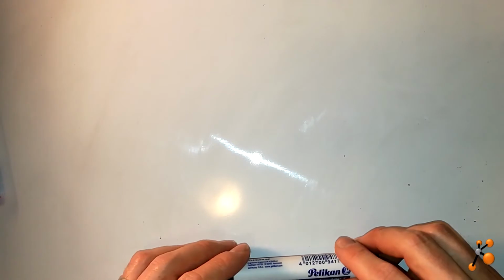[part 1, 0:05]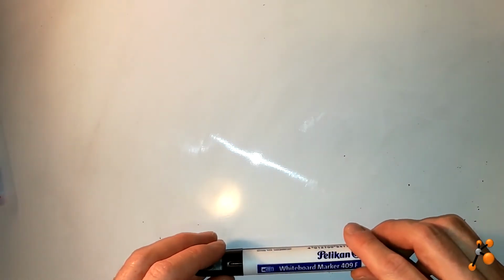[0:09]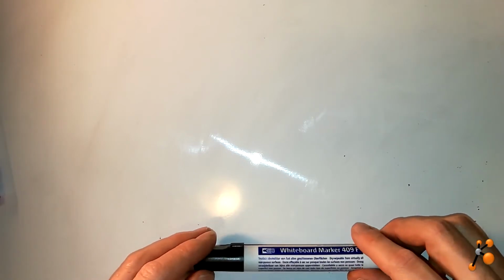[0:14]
Hi everybody, welcome to my channel, and today I'm going to make the first vlog video, and it will not be about a tutorial to explain some technology or some principle, but it's more about sharing ideas.
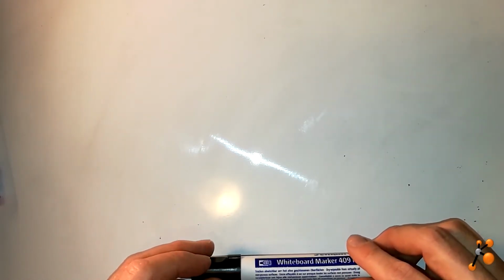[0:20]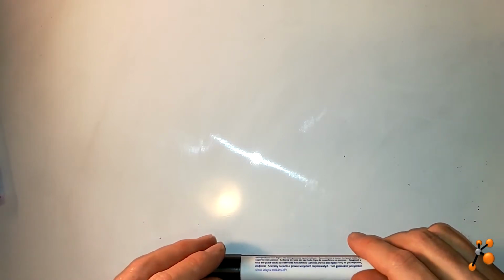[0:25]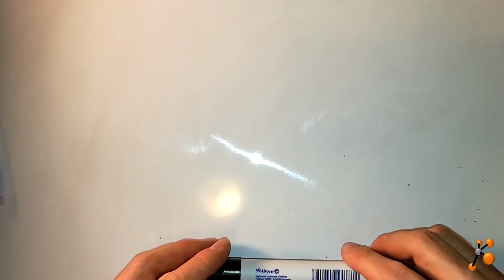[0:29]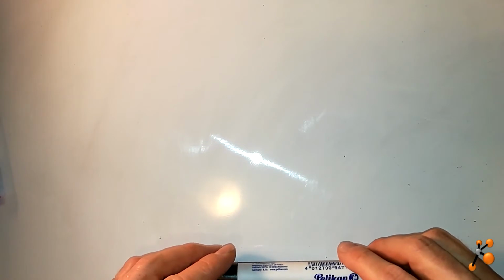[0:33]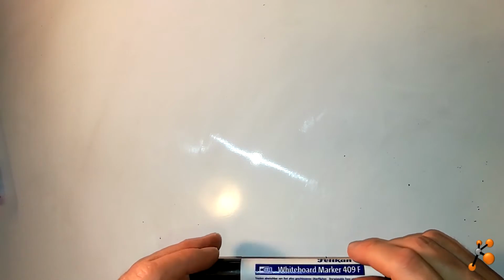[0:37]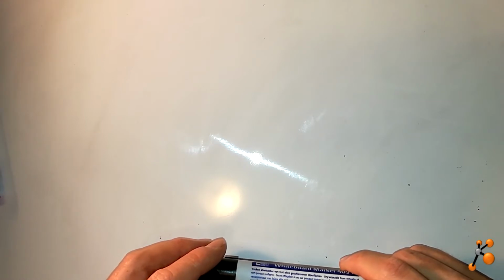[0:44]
I'm a biochemist and I'm working with proteins. I'm trying to purify protein, and currently I try to isolate and purify a fluorescent protein, a recombinant protein which has a fluorescent tag. Currently a protein with GFP tag. And my problem is that I'm trying to purify it and check the quality of the protein by gel filtration.
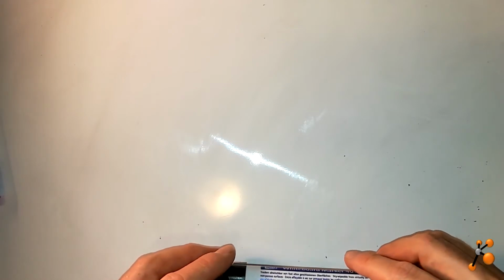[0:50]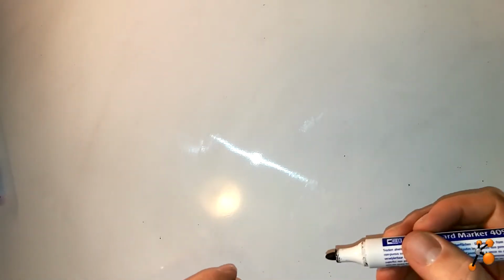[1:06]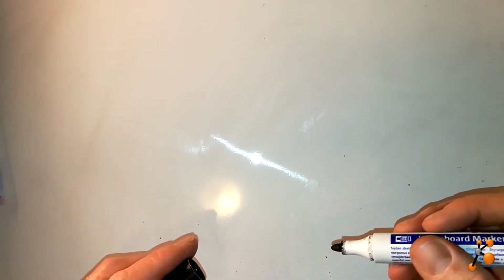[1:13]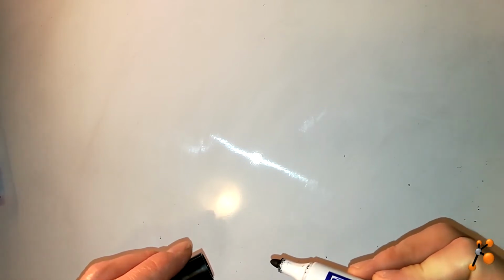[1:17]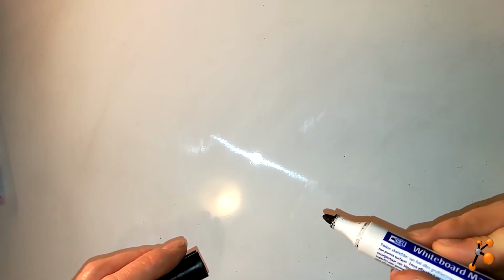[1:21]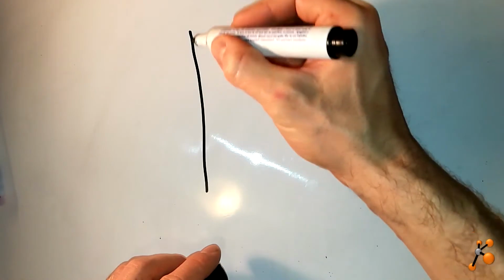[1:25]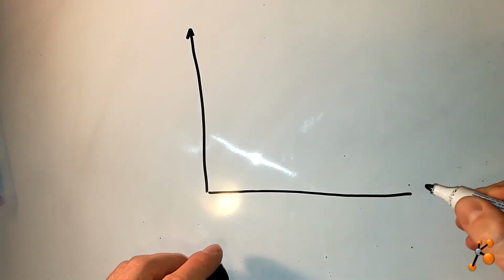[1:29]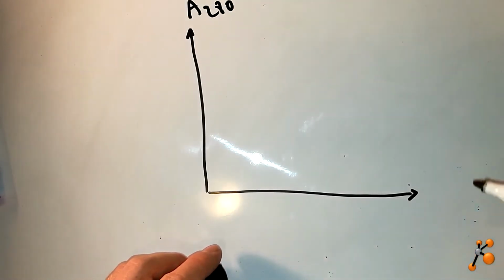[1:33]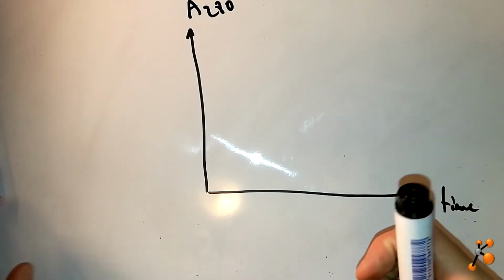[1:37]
So what is gel filtration? It's just a technique able to separate different proteins from a sample, and separation will be by the mass, the size of the proteins. So you use a system called FPLC. It's just a pump, and you make pressure so that a liquid that you inject will go through a column and will then separate the proteins from the sample. To see the protein you have to check the absorbance at 280, and this corresponds to the time of elution.
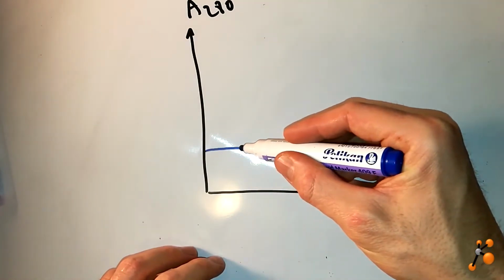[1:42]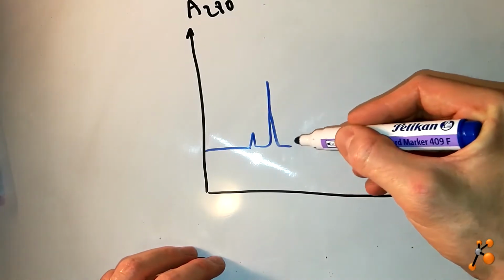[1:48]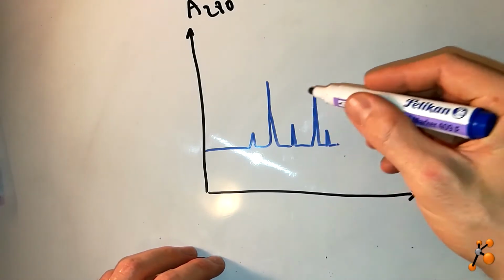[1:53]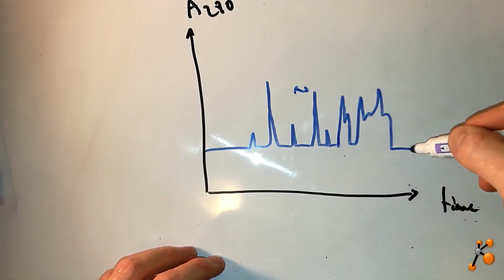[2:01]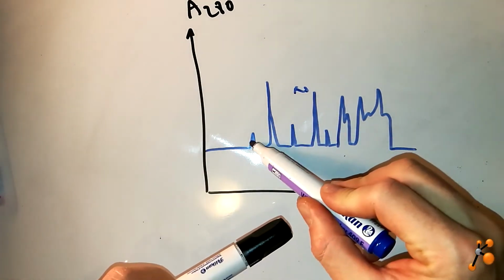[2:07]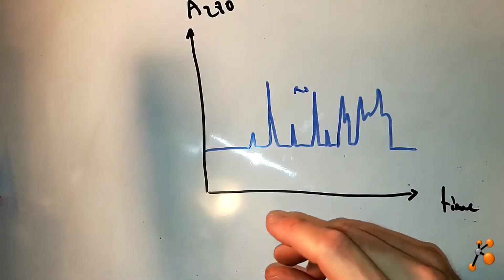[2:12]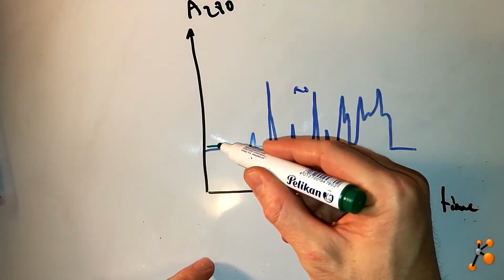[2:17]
At the beginning, for example, you have baseline, you have nothing, then you have the void, and then some peaks start to come, corresponding to different protein sizes. Sometimes the resolution between the peaks is not good, so you can have something also like this. And my goal is, from this complex sample with different proteins, the total area of the peaks corresponds to the total of the proteins. I would like to see where my protein is. Maybe it's a small peak, or maybe it's a major peak on this elution profile.
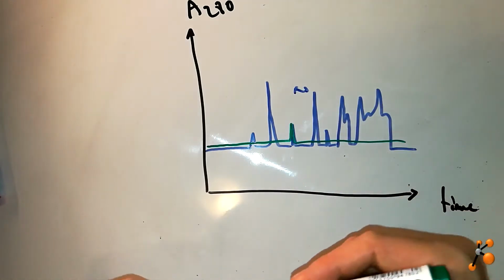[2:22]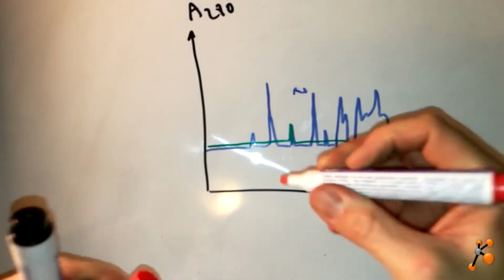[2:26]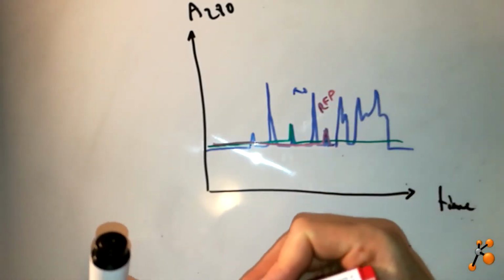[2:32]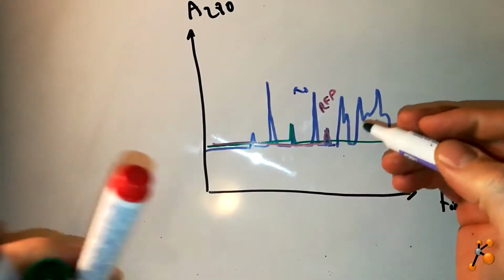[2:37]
Maybe this peak corresponds to GFP protein. But let's also imagine now you have a sample with RFP. Maybe the RFP is this peak, so RFP protein, and here the GFP protein.
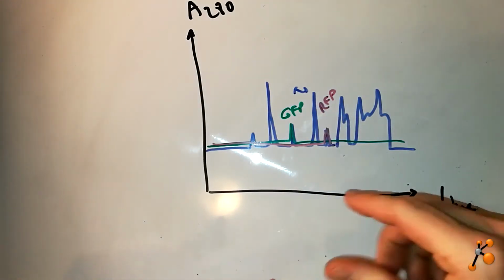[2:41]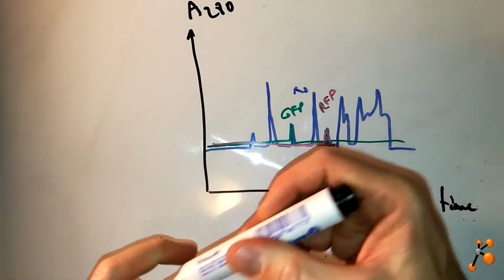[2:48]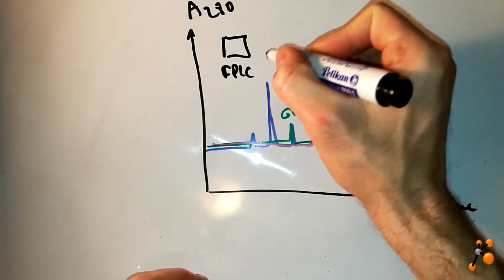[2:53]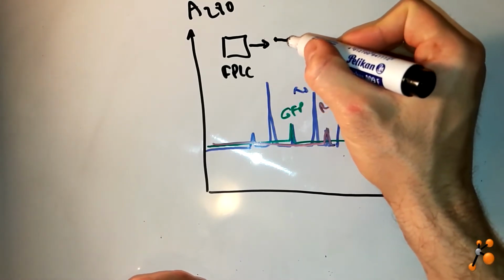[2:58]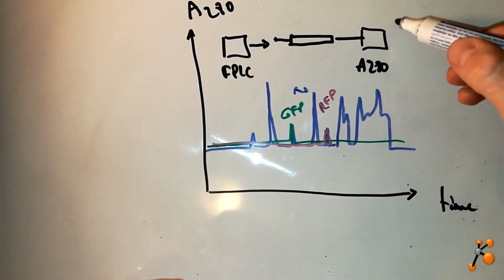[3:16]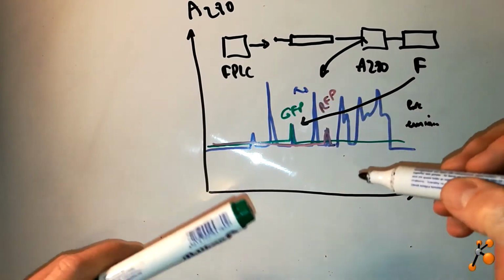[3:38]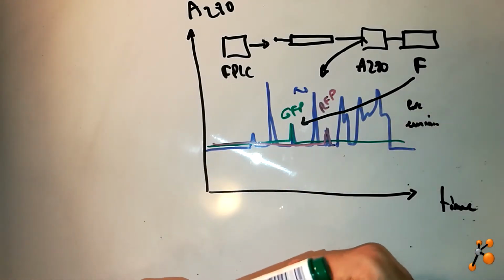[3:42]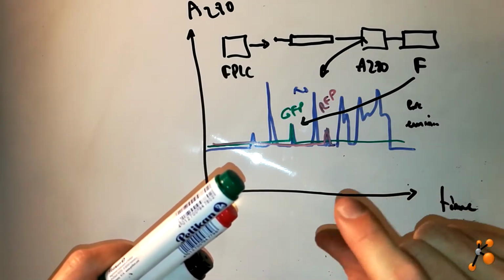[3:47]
So to be able to detect fluorescence, as I told you, you need an FPLC system where you inject your sample into a column. This column will separate according to the size of the protein. You separate each protein, and then you need an absorbance 280 detector so that you finally get this plot. After that you have to add a fluorescence detector to be able to detect, for example, GFP. On this fluorescence detector you have to define excitation wavelengths and emission wavelengths, which will depend on the dye associated to your protein. So you have a sophisticated fluorescence detector where you can select exactly which wavelength in nanometers you want, and also for the emission.
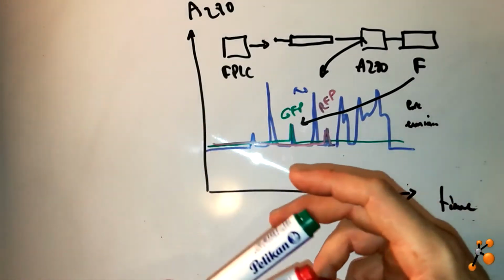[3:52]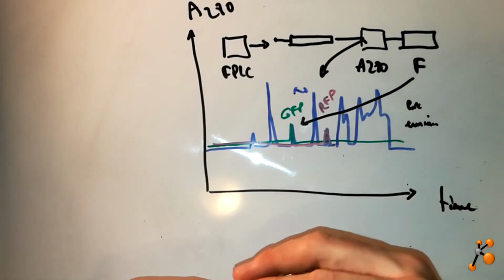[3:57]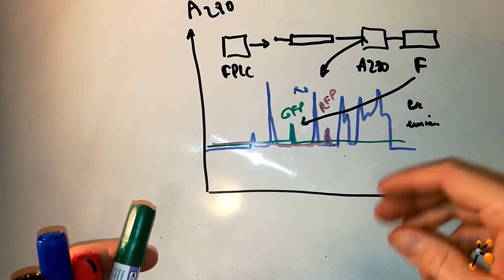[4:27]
It has really sophisticated optics inside, and uses very pure light, which gives you the whole range, and then you have a selection of the excitation and then emission by different filters. So this is very expensive. It costs around 20,000, and sometimes it's also not adapted to your system. So you need this kind of device, and you need to buy additional software to be able to drive it and read your analysis. This costs like 20,000, so it's very, very expensive.
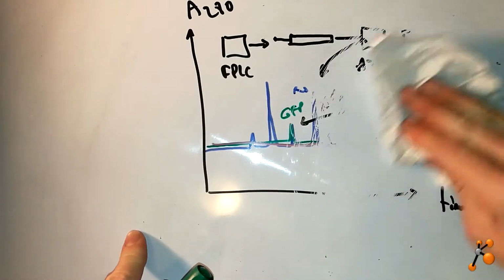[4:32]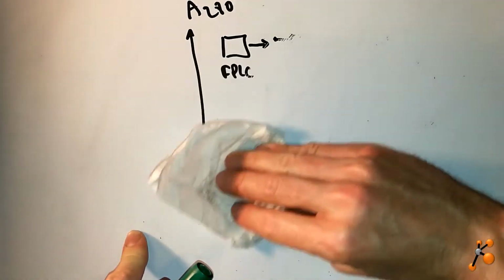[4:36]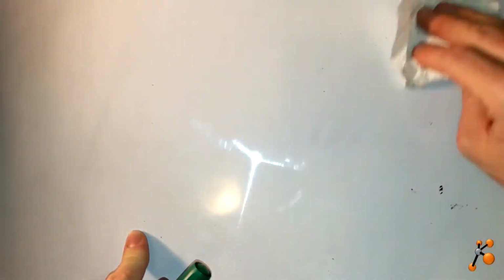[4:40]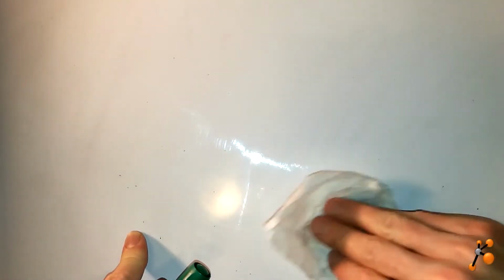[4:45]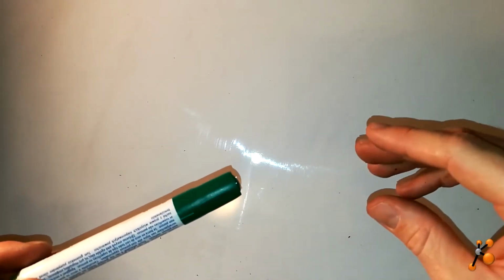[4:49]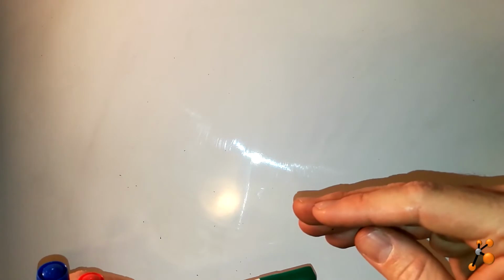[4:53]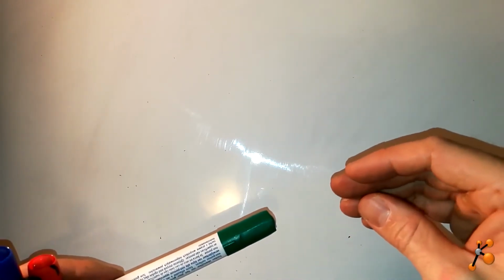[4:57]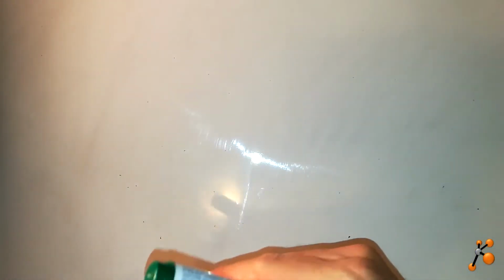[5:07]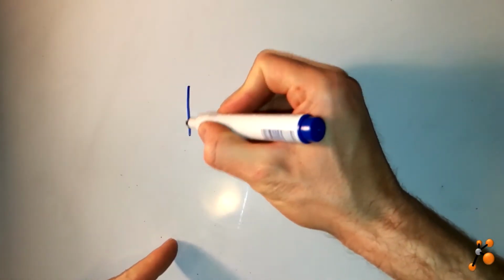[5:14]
So my goal is to try to develop a cheap system that I will put after my absorbance detector. This system will not use sophisticated optics, but just a simple LED. So first, I think this is just some idea, you have to define your project, so what you want to read. In my case, I want to read GFP. So I will need the right LEDs to excite the GFP at the right wavelength. If I have to use RFP, it will be different. So in my case, I try to get a blue LED, so I ordered a blue LED.
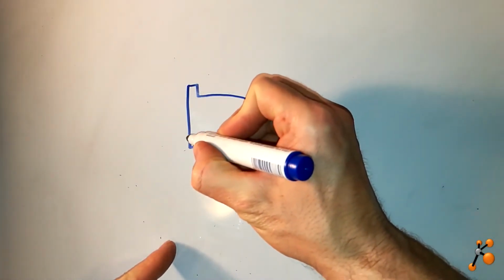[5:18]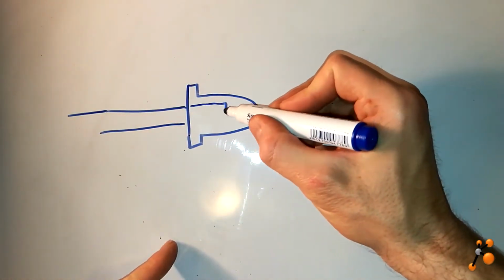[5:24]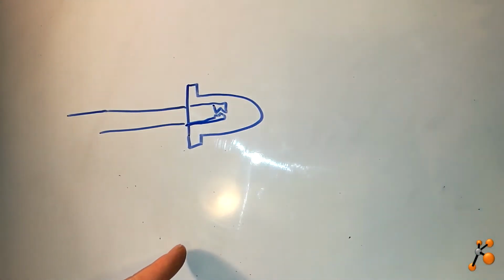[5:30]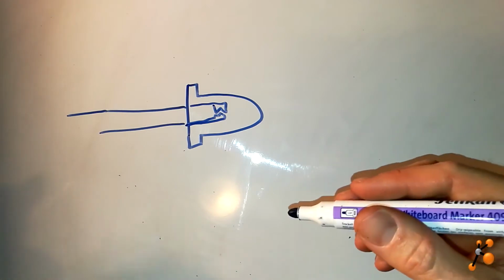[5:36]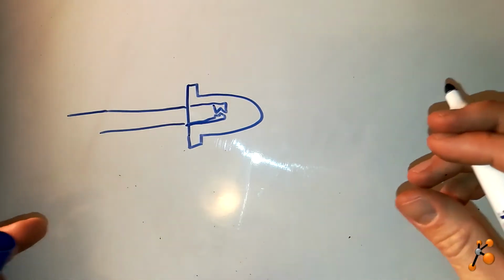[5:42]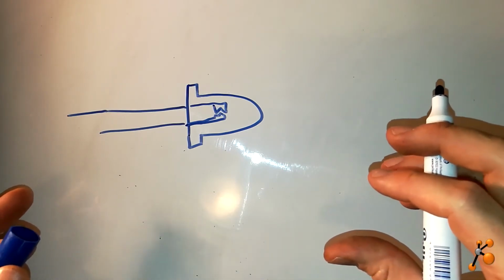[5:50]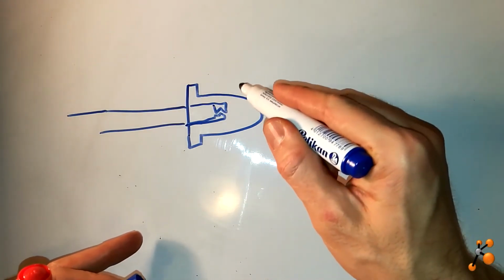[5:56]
I'm drawing it now. Let's put it like this. You have a blue LED, and this blue LED has some dimension. Why am I talking about the dimension of the LED? It's because later I would like to develop the system like a box where everything will be inside, like the optics, and my idea is that this system will be driven by an Arduino prototyping board. So we have a LED with some dimension. The LED is emitting light.
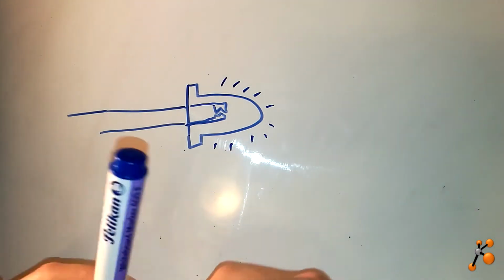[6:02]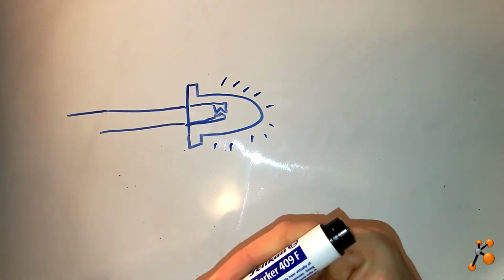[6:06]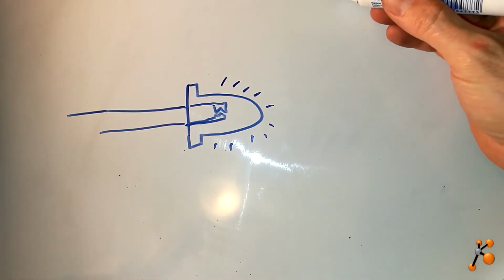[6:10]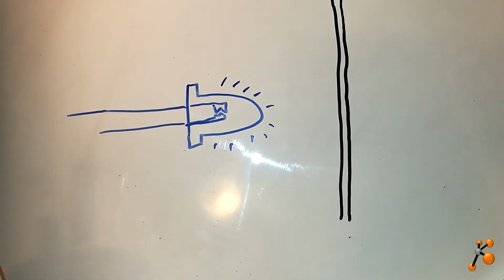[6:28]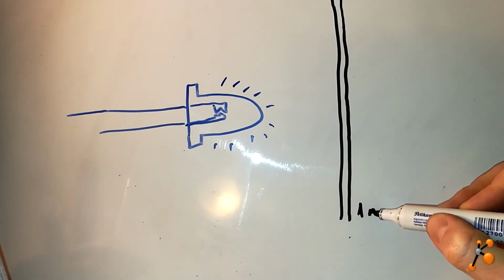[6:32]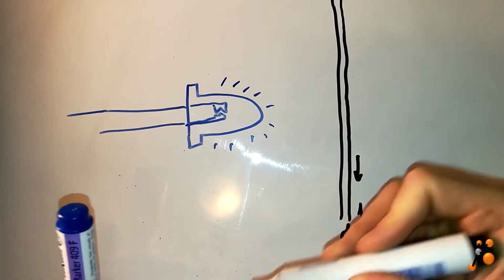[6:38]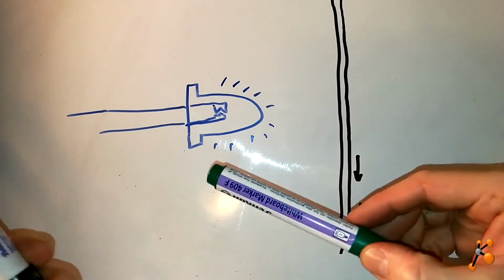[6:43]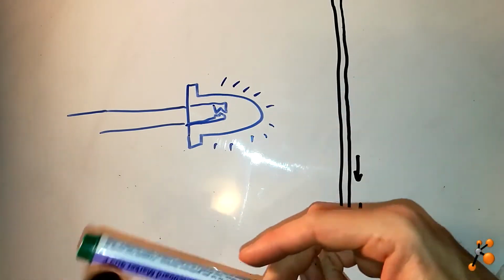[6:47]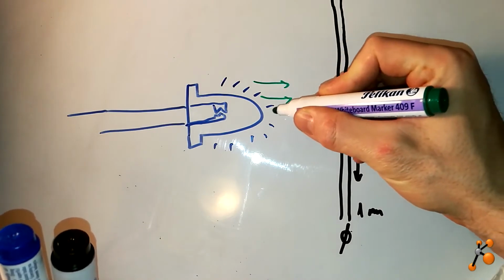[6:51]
My goal will be to excite a protein which is in my sample after elution, so during the time you have flow inside capillaries. I don't know the capillaries yet, but maybe I will use raw silica capillaries with 1 millimeter outer diameter, where you have this flow of proteins. The problem is that here I have to focus the excitation light. So the light is coming like this,
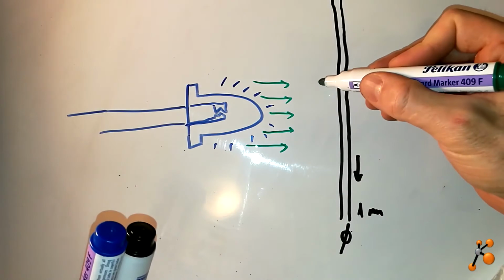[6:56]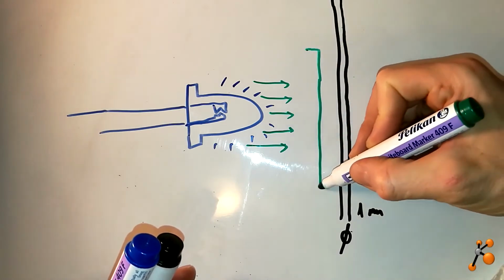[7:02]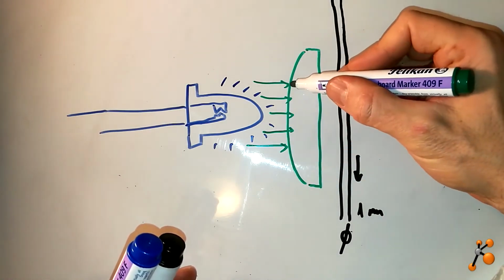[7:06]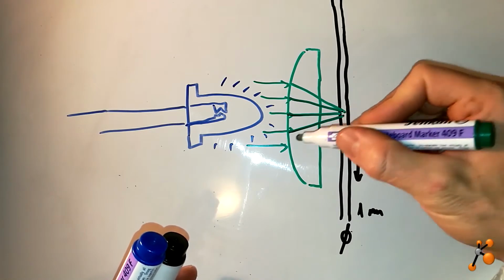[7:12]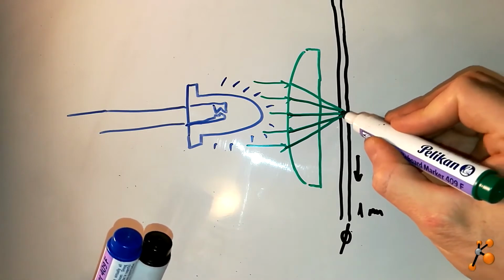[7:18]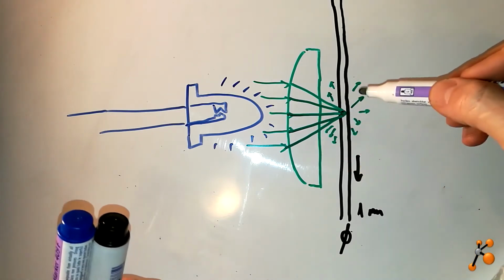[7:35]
and my goal is to use a convex lens that will focus the light exactly in one direction here, and then here I will excite, and then of course my sample will emit light with another wavelength, meaning that if I excite with blue and I have GFP tag, it will emit in green.
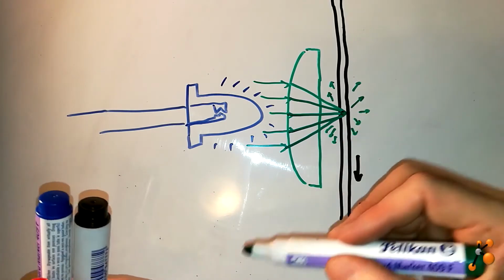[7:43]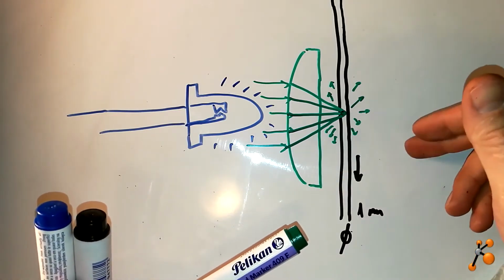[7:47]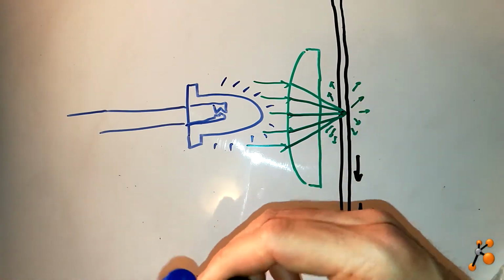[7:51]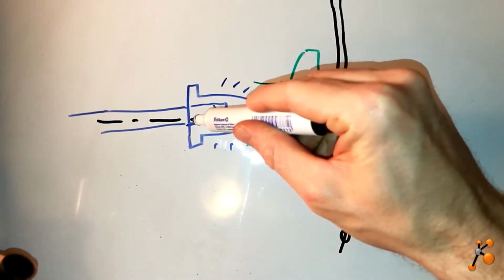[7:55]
And now I have to take this signal from my sample. How can I do it? The best would not be to put the detector just in front of the light, but we can put it at 90 degrees. So imagine now we have an axis here, like this.
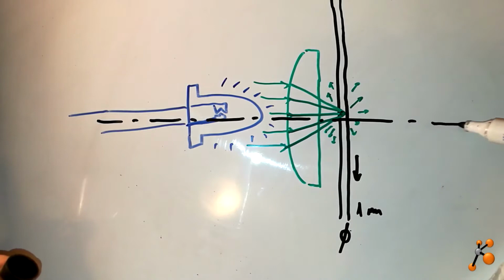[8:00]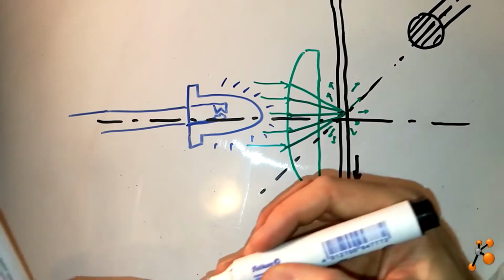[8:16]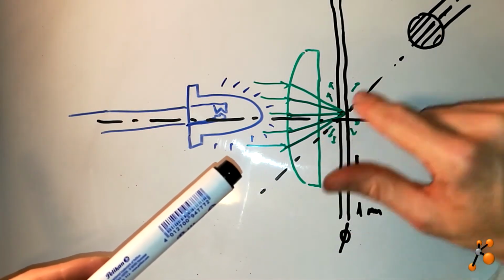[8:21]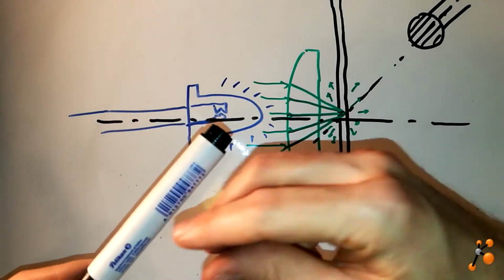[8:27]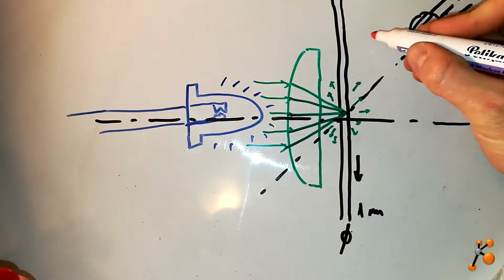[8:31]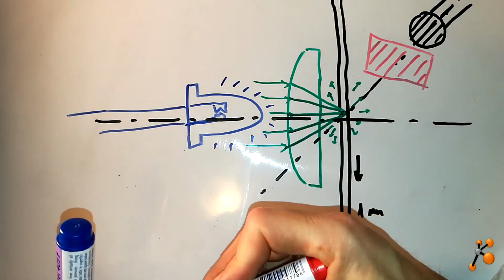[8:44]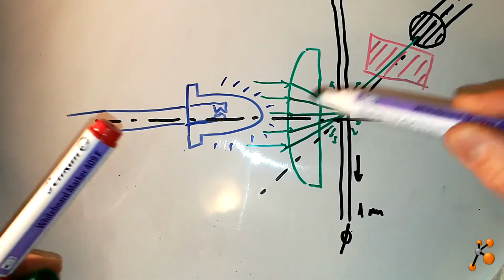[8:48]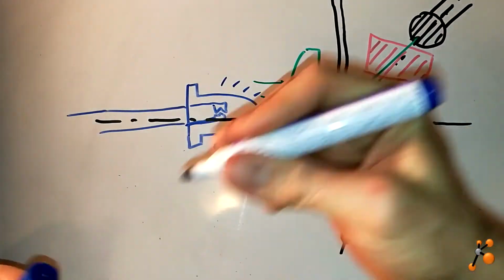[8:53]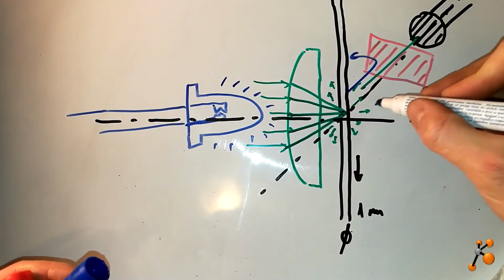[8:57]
Then I would like to make here my detector. So a detector of light, which has a surface like this, and then we will try to get the light here. The problem is you have some contamination light, and to avoid this I would like to put some filter to take just the emission light, the green, and reject all contamination light. So the green will go through, but the other light coming from here will not pass the filter. So this is the idea.
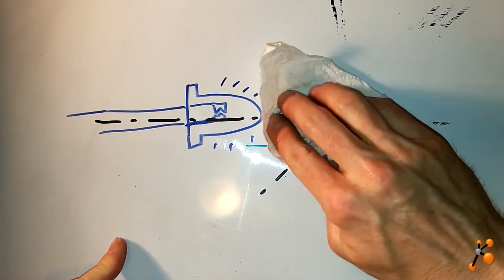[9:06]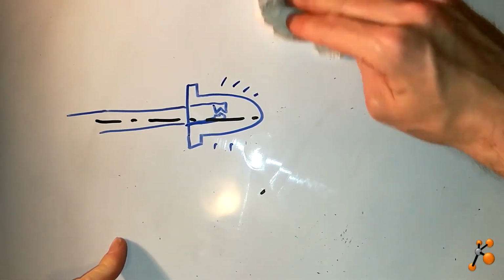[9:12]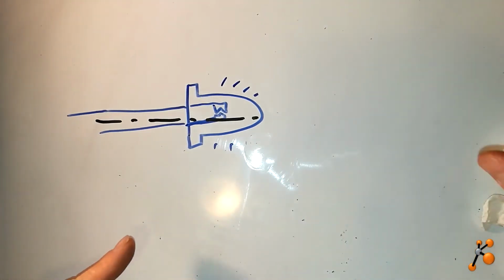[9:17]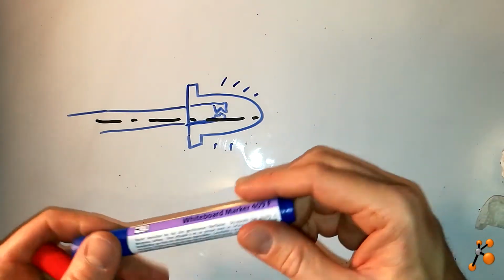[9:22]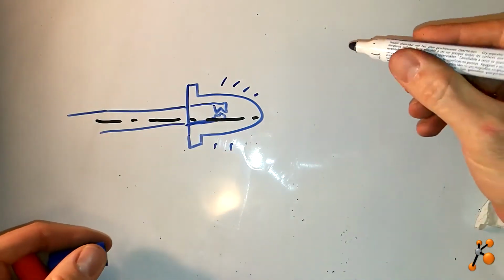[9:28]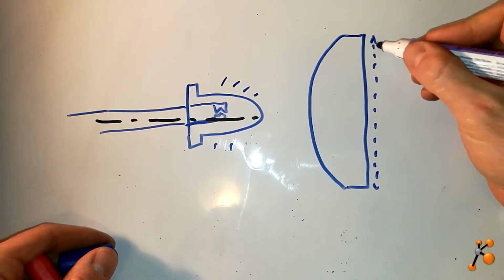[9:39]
So how can we build it? First step, we can start with the program, but I think the first is to try to build the optical system, and also how I can place all the stuff. So here we have the LEDs, and as I say, we have to put the LEDs, and then we have to put the lens. So the lens, let's put it like this. The diameter of the lens is 12.7 millimeter.
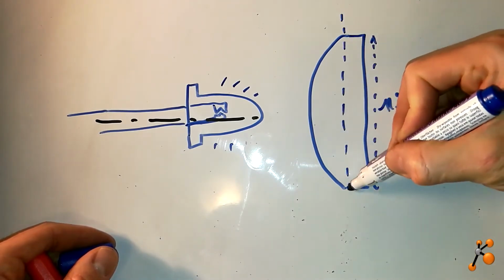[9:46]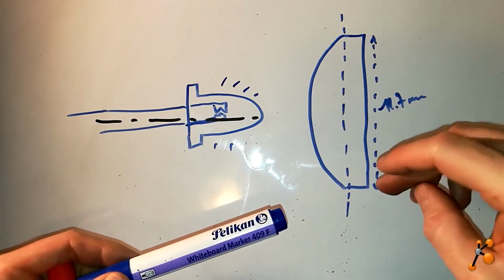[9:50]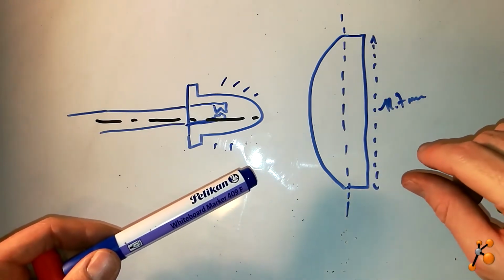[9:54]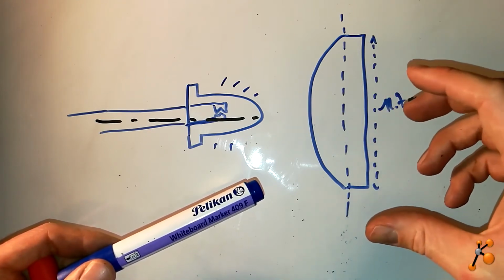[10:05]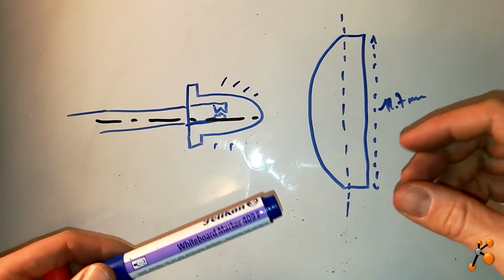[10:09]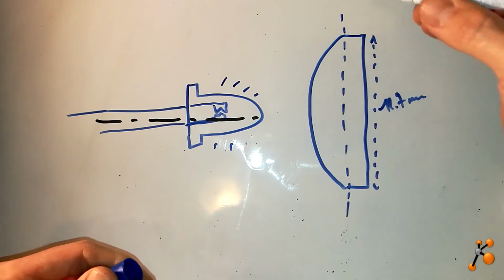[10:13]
Then I can talk a little bit about the lens. You have to be careful when you buy it. Sometimes they can have a coating, and this coating is very thin, like a nanometer, and it is really sensitive to temperature, it can crack, and it is also sensitive to air pressure. Also you should not touch it without gloves, so you have to use latex-free gloves.
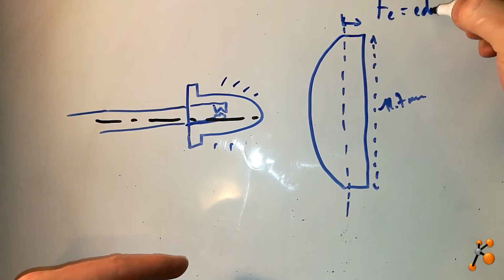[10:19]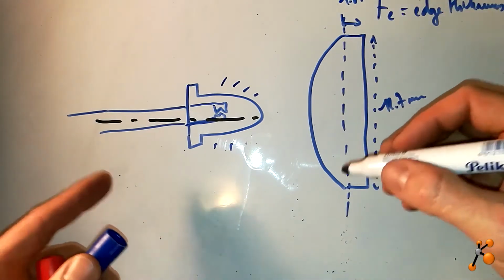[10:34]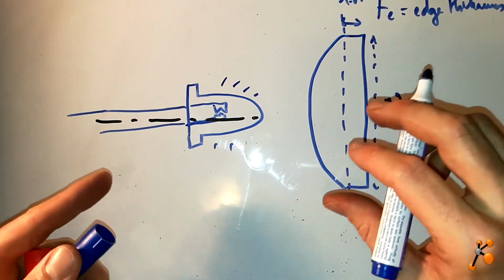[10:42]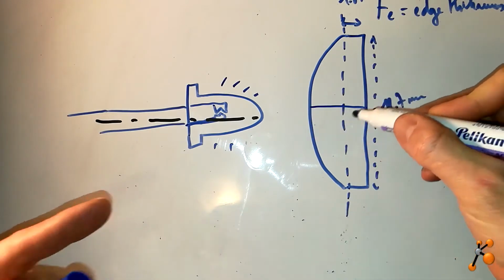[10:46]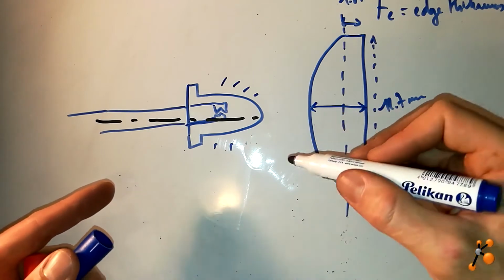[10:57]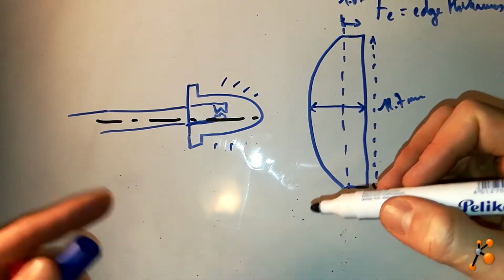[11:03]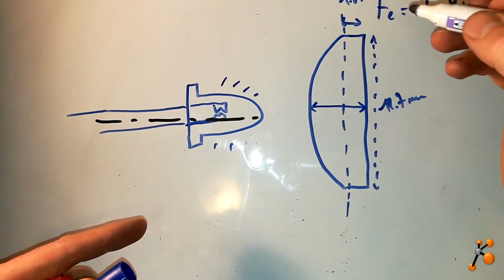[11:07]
And how is a lens? Here you have the TE, called edge thickness, and here the dimension is 1.8 millimeter. I just put some dimensions because the next step I would like to make one prototype, not complete, of how to arrange all these different components. It's nice to have, because I will talk about dimensions, and it's important to already know the dimensions of your components before drawing something on the computer. When you want to design, I think it's better to write everything in 2D before going directly to 3D. So here we have 1.8.
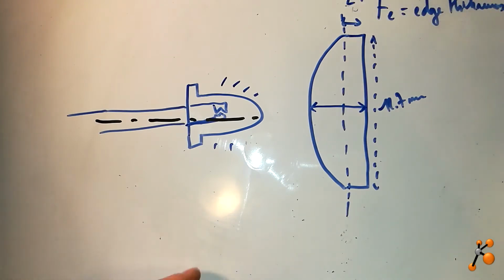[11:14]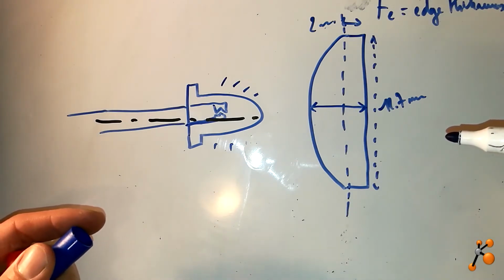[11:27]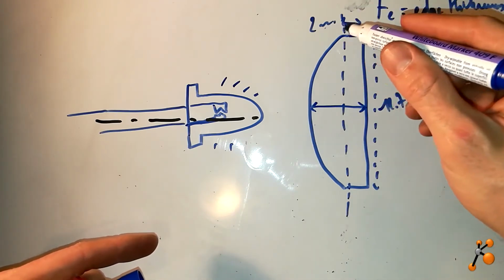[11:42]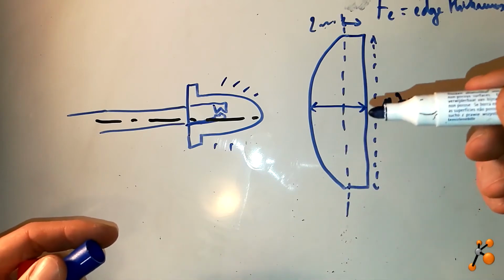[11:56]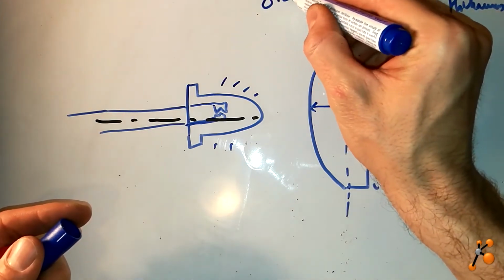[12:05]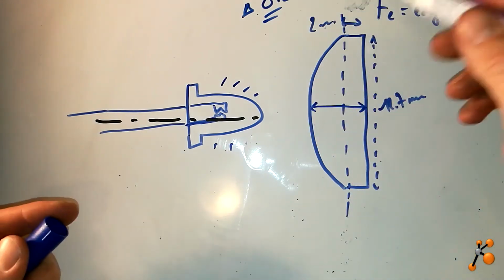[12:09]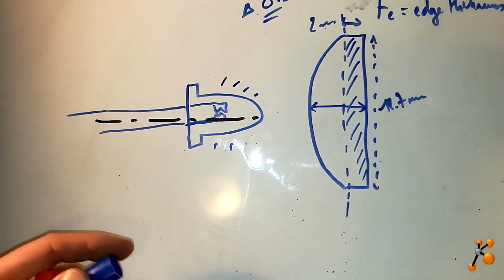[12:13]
Let's say, to be simple, we make it 2 millimeter. Be careful, 2 millimeter. For the 3D printer, I'm going to use a 3D printer, and I would like to use PLA material, black, which absorbs everything. It's better than if you have colored or something else. So black is good for optics. So here we have 2 millimeter and not 1.8, because when you design something in AutoCAD or other 3D software, your 3D printer will not make it exactly as it should be. So I consider that you have 0.2 variation in dimension, so 1.8 to 2 is the same. So let's say that this edge thickness is 2 millimeter.
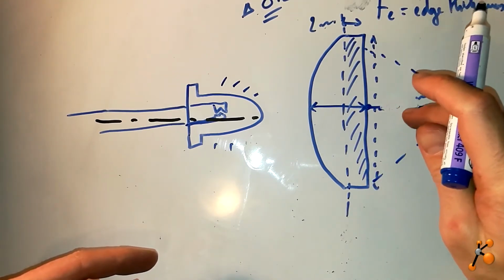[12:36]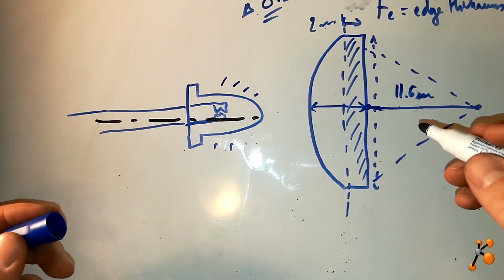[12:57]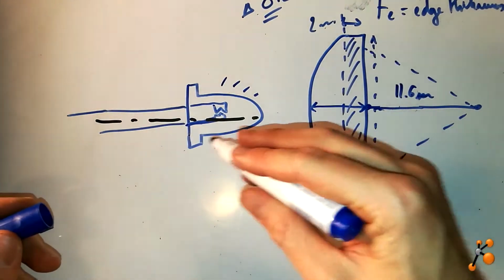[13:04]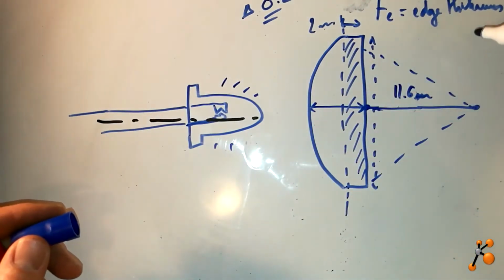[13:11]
And for the lens, we have a very important parameter. It's called the back focal length. This back focal length starts from this part to here. It's where you have the focusing point. And the dimension of the back focal length is around, I think, 11.6 millimeter. So this is important. I would like to design something basic, also to test experimentally if it's working. So I would like to make a small box where everything is more or less set up in this line before making the additional part at 90 degrees with the detector. I will just put this inline, positioning, for example, an LED plus a lens, and see, for example, with a piece of white paper, if I can focus on one dot and see if everything is correct before going forward.
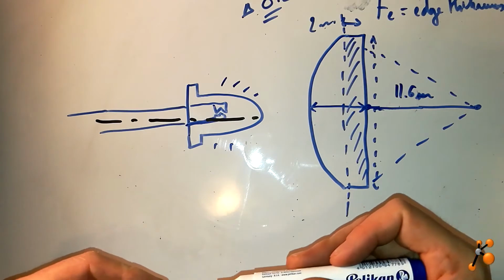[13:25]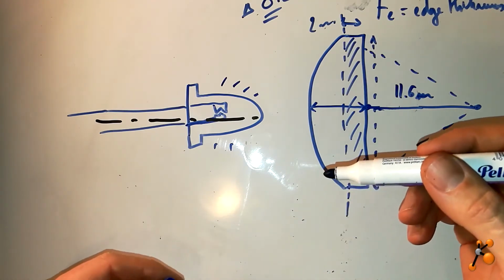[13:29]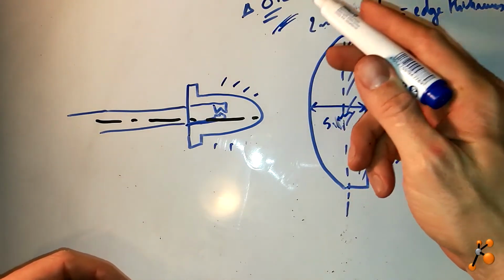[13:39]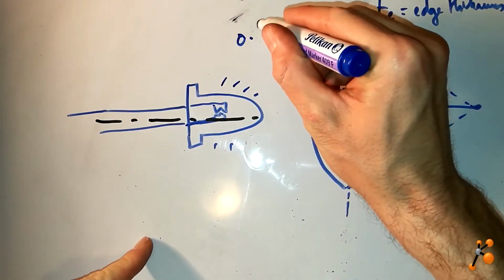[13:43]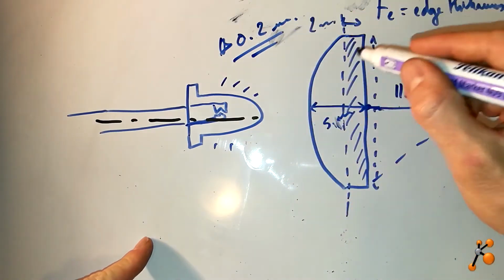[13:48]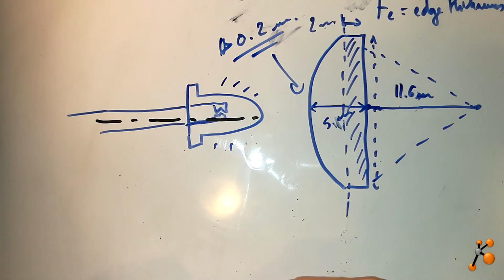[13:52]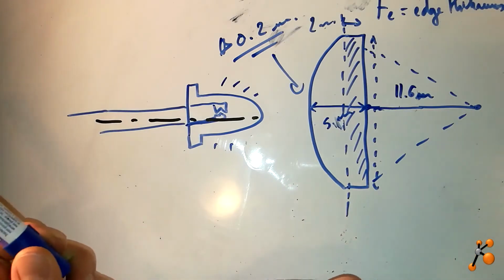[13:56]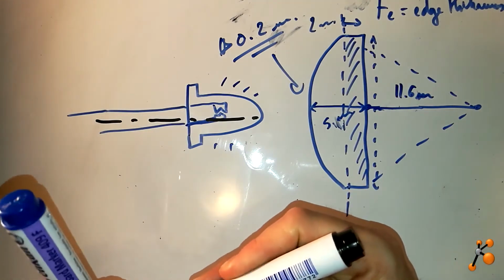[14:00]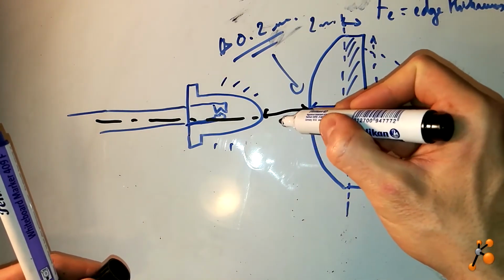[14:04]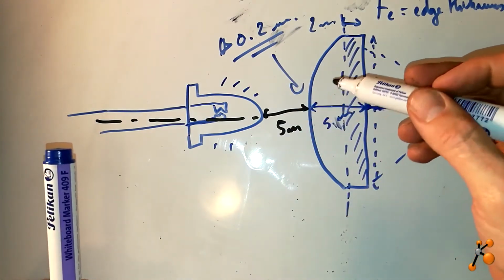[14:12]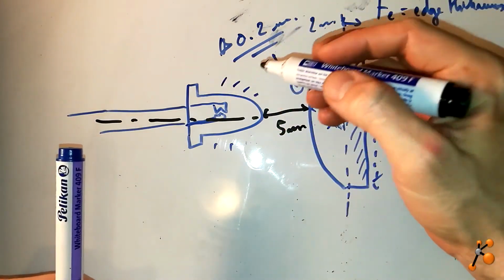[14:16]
Okay, what is also important here, the lens thickness dimension is 5.1. I consider it to be 5 millimeter. As I told you, we simplify. Oh, you cannot see, I'm sorry. 0.2 millimeter variation. So that explains why I changed this to 5. And so I would like to design a box. To make the box, I need to have some dimensions. So also here, I would like to put 5 millimeter, not too close. Normally, the LED is not heating, so it should not destroy my lens or cause some deformation. But 5 millimeter, I think, is good. I'm not sure, but I think it is good.
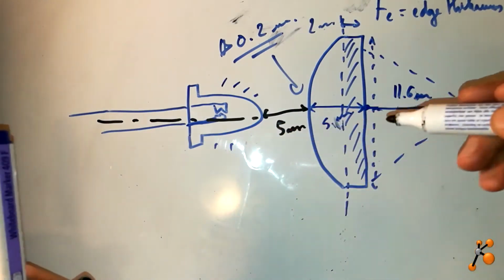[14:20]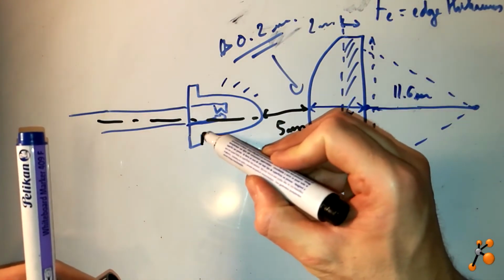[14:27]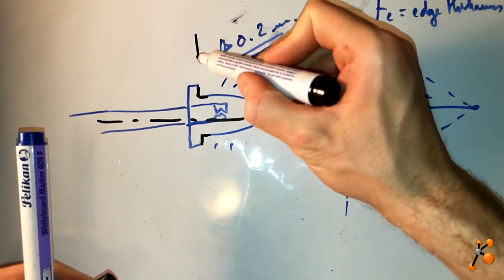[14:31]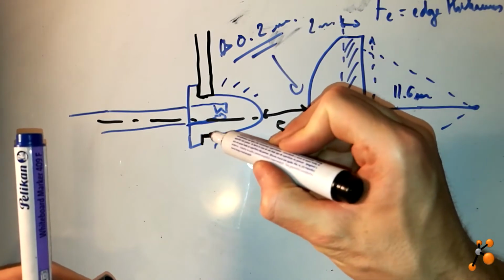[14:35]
Then I want to insert my LEDs inside the cube, and I will use this square here, this angle, to draw a system. So let's make a wall here.
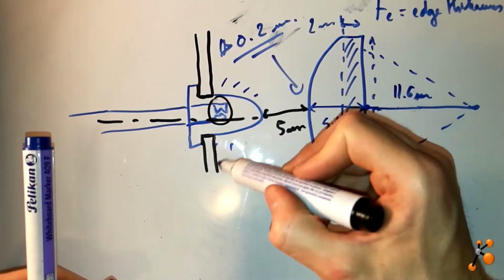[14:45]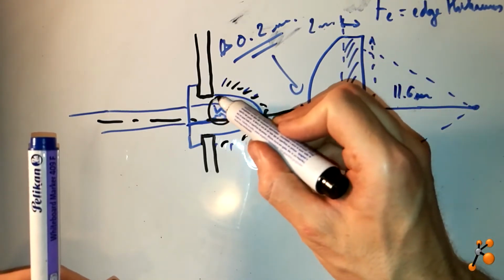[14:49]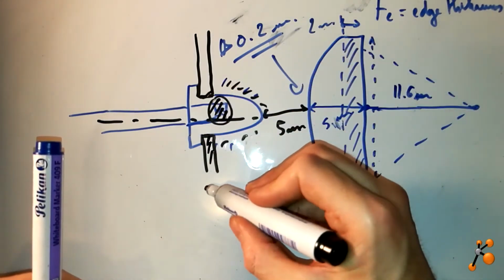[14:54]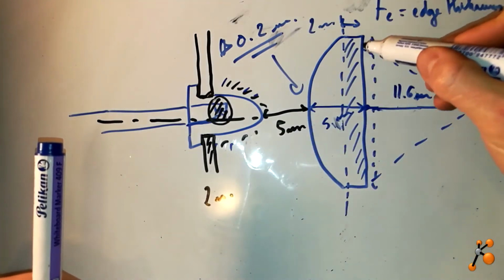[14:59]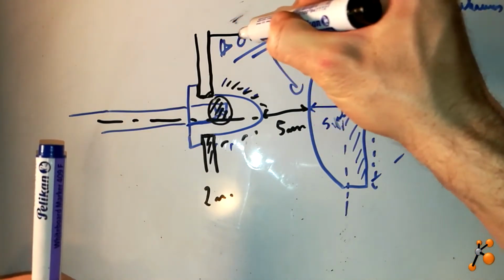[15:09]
This is more or less the flat part of the LEDs, and just before where you have the emission part of the LED. So it's better to put the wall here. The wall, I would like to put 2 millimeter wall. And then we know that this distance here, I told you, is 12.7. Okay? So you need to make a wall exactly 12.7.
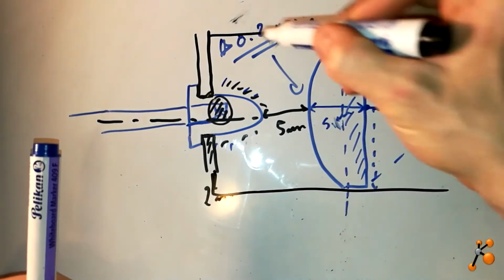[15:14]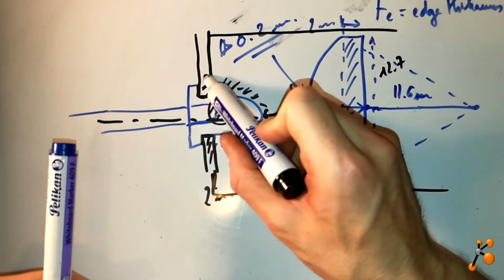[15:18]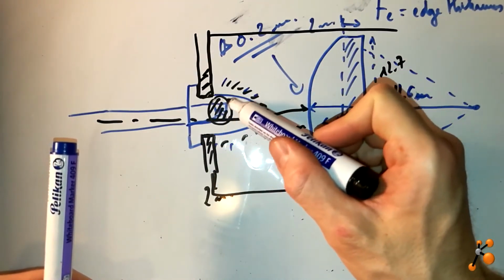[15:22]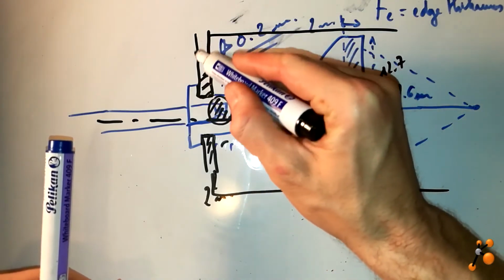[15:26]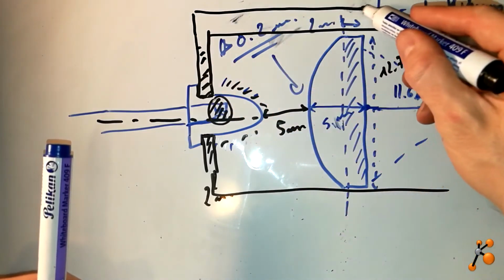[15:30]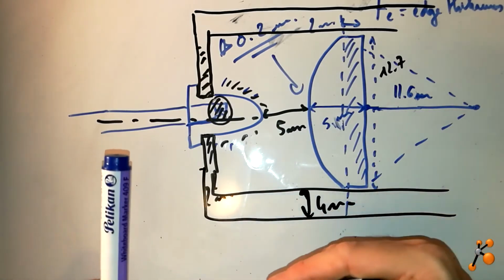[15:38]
So here I put it thin just to insert, but not too thin because I don't want it to break, and not too big because I don't want to mask some emitting light. Okay, so here it's 2 millimeter, but I think after we can go bigger and go for 4 millimeter. Let's say 4 millimeter here, thickness. 4 millimeter.
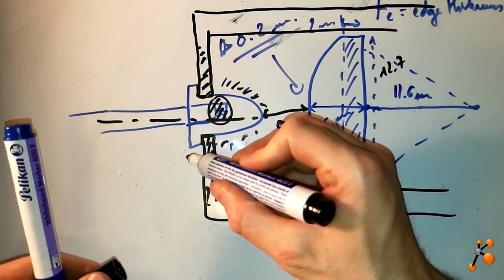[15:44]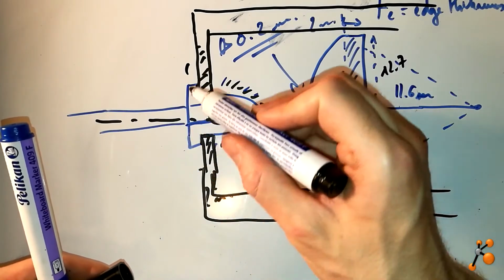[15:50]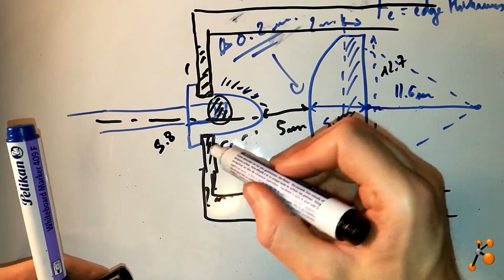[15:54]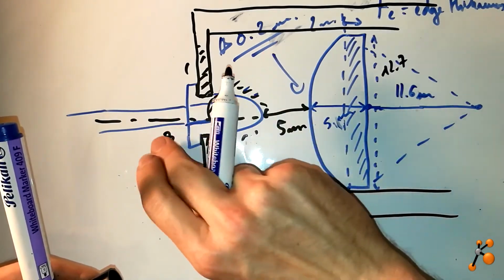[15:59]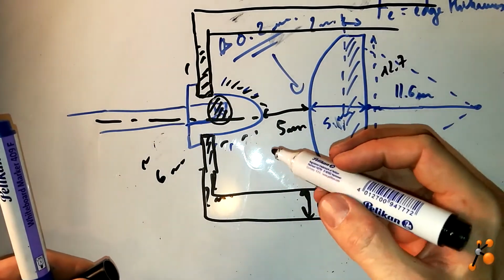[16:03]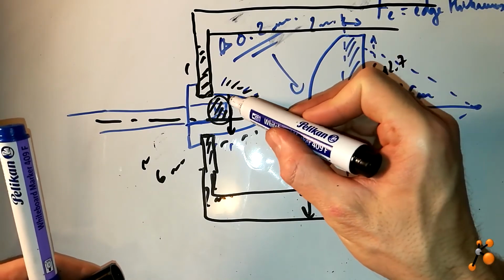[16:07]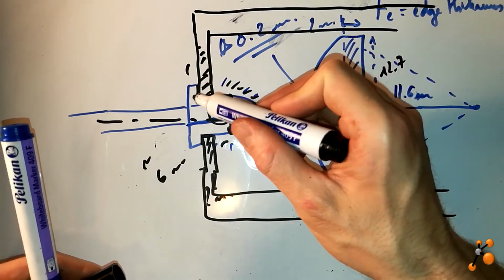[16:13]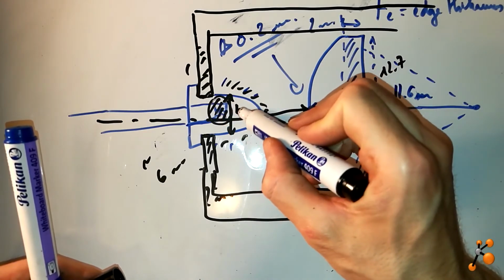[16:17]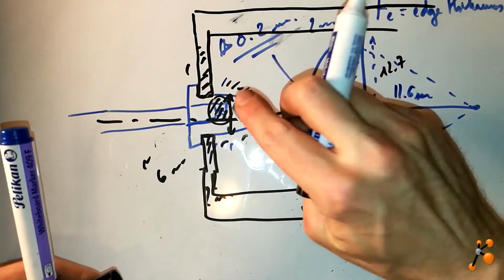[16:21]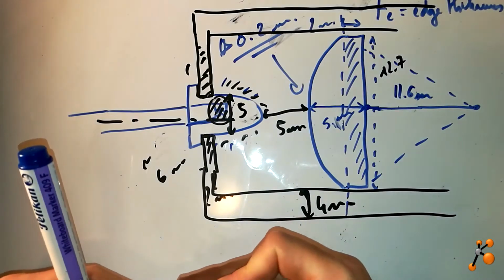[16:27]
Then here we know that the LED, I didn't mention, but the LED here is 1 millimeter thickness. The diameter is 5.8, so more or less 6, as I said before, that I will make it more simple. Here we have the diameter where I will insert. So this is an important diameter that we should be careful. It's 4.8, but we will put 5 to simplify the system, because anyway the printer is not really precise. You have some difference, as I told you, 0.1, 0.2 you have to consider.
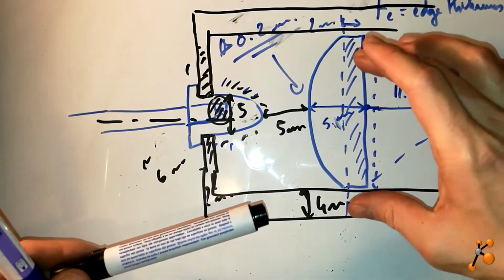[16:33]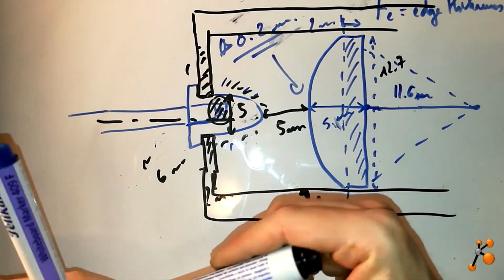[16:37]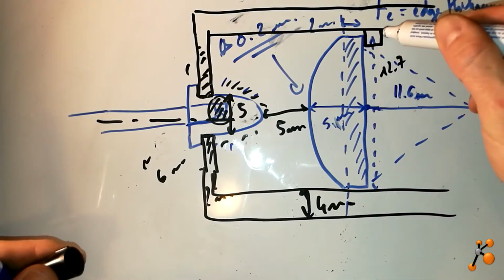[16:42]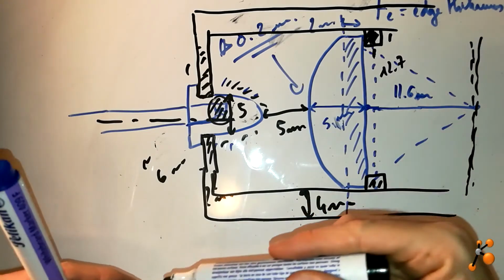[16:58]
Then the position of the LEDs will be here, the lens will be here, so I have to lock it. So I would like to put like a small box of 1 by 1 millimeter like this to block it. And then I will test if everything is fine here with my capillaries. Okay.
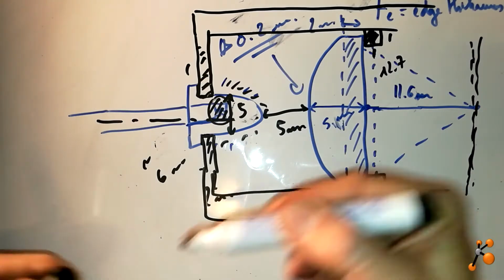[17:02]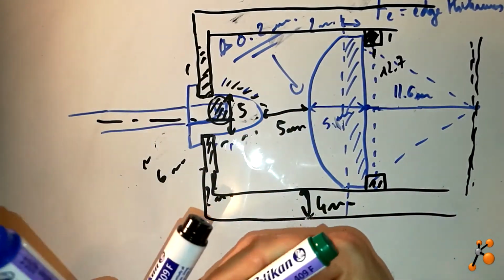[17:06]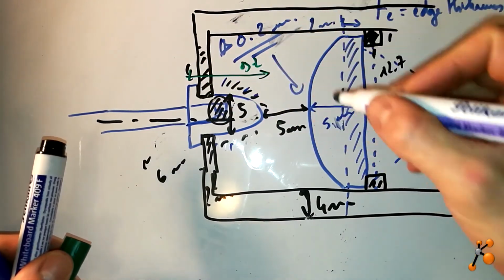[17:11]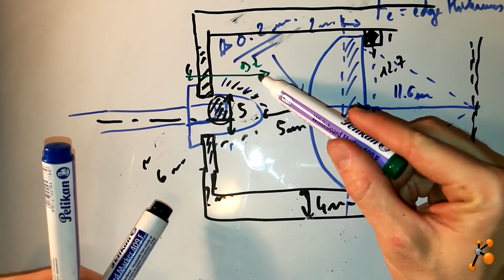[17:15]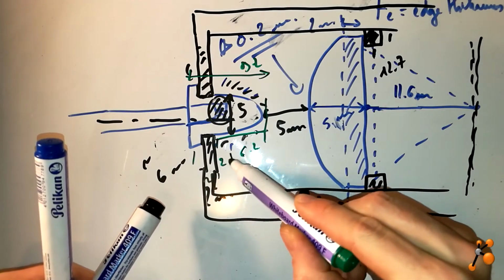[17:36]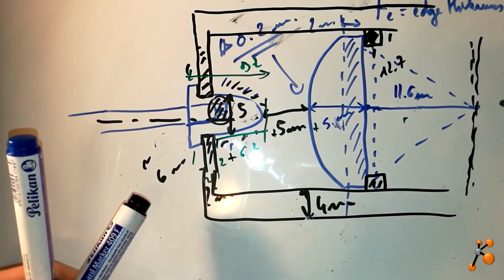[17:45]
Here we have also dimension of the LEDs, which is 9.2. So here we have 9.2, and then we have 1 millimeter here outside. Here we have 2 millimeter of thickness of the wall, so it's 3. 9.2 minus 3, it's 6.2. So this distance here is 6.2. So we know that this should be 2 plus 6.2 plus 5 plus 5 plus 11.6.
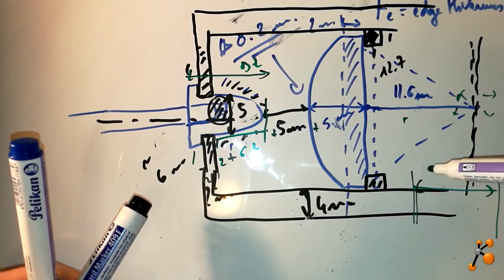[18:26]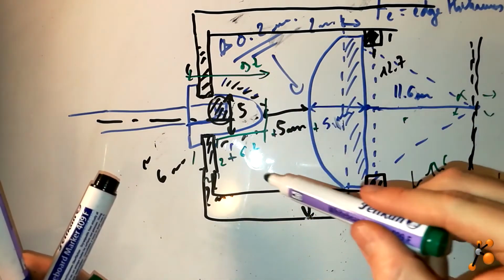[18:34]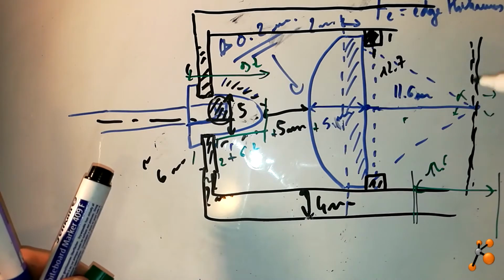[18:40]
But first I would like to design this first part to see, for example, if I make it like this, then I will put a film, a paper, white paper, I don't know, to see if I can focus and everything is fine, to really define if it's 11, you know, it's not exactly, this is theoretical, and after when you print it there can be some difference. So it's important according to what you start to prototype, the 3D prototyping, then maybe you have some changes. So I would like to make theoretical, experimental, go back to theoretical, experimental, and then try to make the best and to have something as accurate as I can.
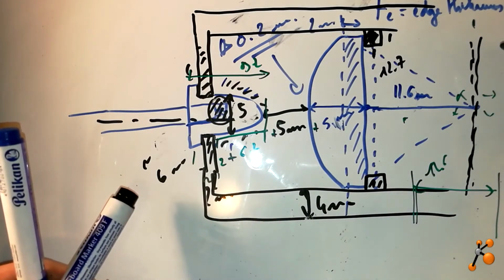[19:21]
Okay, and also later when I will dispose the lens inside, I will try to see here if I put something to really lock the lens. But first let's start to make this. So let's go to the computer.
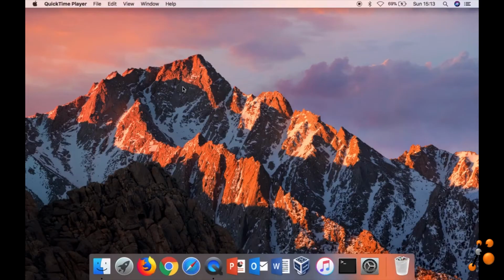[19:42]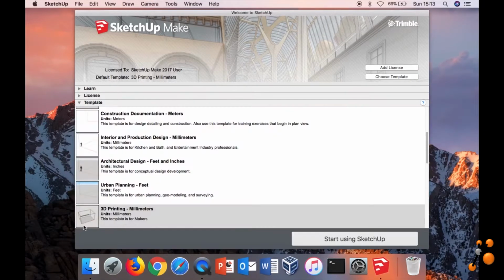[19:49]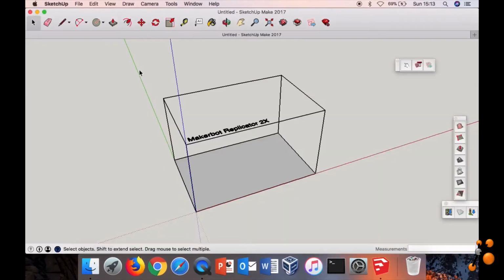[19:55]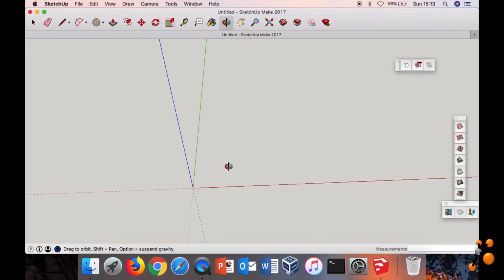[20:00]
So we are now on the computer, so let's start SketchUp. SketchUp is a program to make 3D objects. It's nice, powerful and free. So we choose millimeter, because from the beginning I'm always talking in millimeter. Remove this. Then I would like to make a prototype, so something really simple. So let's start with a rectangle. I don't know yet the dimension here, but we know already this dimension.
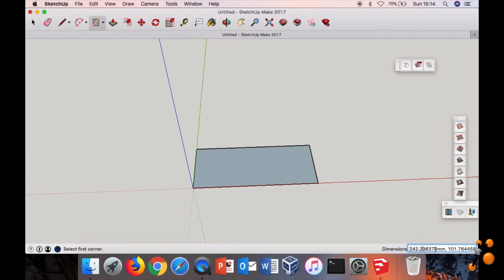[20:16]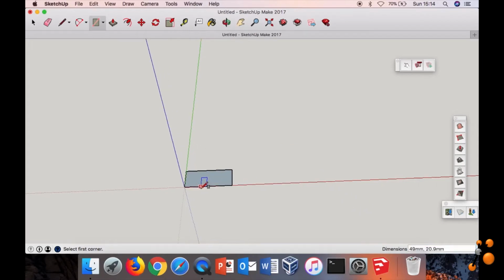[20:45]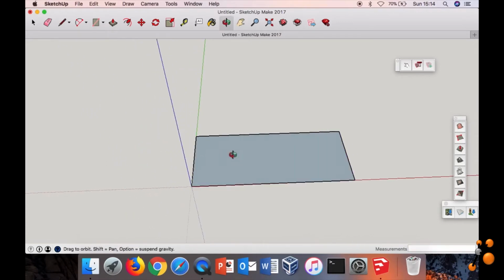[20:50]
It will be, so here let's put, to start, 49 millimeter, and here we know that the thickness of the wall here will be 4 millimeter. Then we have the diameter of the lens, which is 12.7. We add 0.2 millimeter, so it will be 12.9 to be sure that we can insert the LEDs, and then again 4 millimeter. So 12.9 plus 4 plus 4, it's 20.9. Enter. Wow, it's small. Okay, so now we have this. Okay, let's move a little bit.
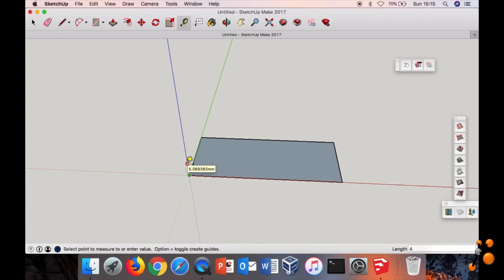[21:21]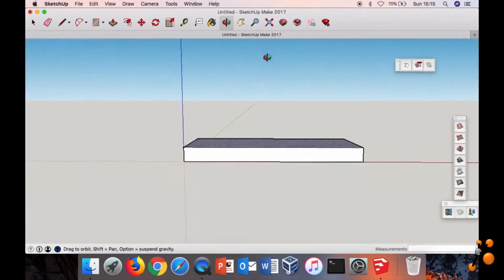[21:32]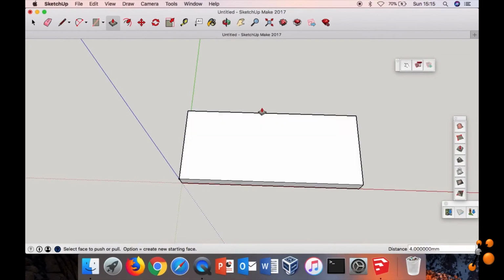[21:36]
We can already, so we are going to make, I think the best will be to make a bottom top building to build our object. So here is the base of our object, and then here we'd like to make 4 millimeter thickness also on the bottom part of our device. So here 4, so we put some dot here, and we extrude this until here. Okay, so we have already this bottom part like this. So now I'm going to put some line to define, for example, the wall. Here it's 4 millimeter. Here we have 4 millimeter, again here 4 millimeter wall.
Let's put a line, and then here we decide to put it thinner for the reason that I explained before. It is 2 millimeter. Okay, like this. Now we have a 2 millimeter wall here, 4 millimeter here, and 4 millimeter. The LED will be inserted like this.
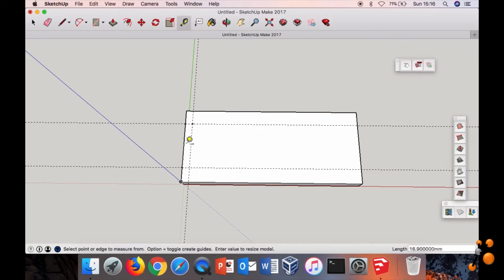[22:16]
So now I have to define where the LED finishes inside the box, the future box. We know that the distance of the LED is 9.2, sorry, 9.2. We have an external part, it's 1, and the thickness is 2 millimeter, so from here to here we have 6.2, so 9.2 minus 3, 6.2. Enter.
So the LED finishes here. We decide, somewhat randomly, I'm not sure, to make a 5 millimeter distance between the LED and the lens, and for the lens we also decide to put 5 millimeter. So the lens is finishing here, here, and here. And here I have to put a small cube, just to lock the LEDs.
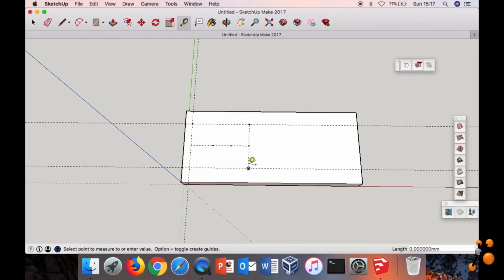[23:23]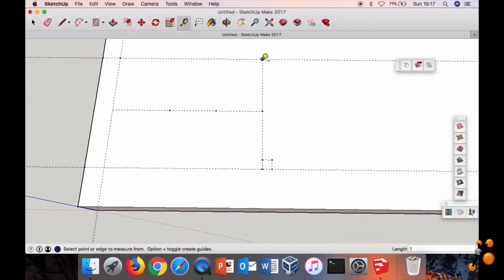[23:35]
So let's draw something. Let's zoom also, it will be better. So 1 millimeter like this, 1 millimeter in this direction, and finally we put 1 millimeter like this. We do the same on the other side, 1 millimeter. So we will print it and see how it looks and if it's working.
What is important here is to now add this back focal length, which is 11.6. So my LED will be until here, 5 millimeter distance. Then we have the edge thickness of 2. Let's put some font. So the edge thickness of the LED, then we have the curve of the LED until here. Here is the base of the LED, a flat part, more or less locked by here. And then from here to here, 11.6.
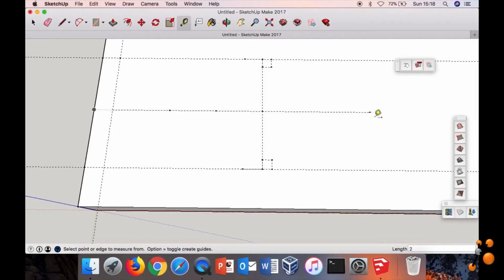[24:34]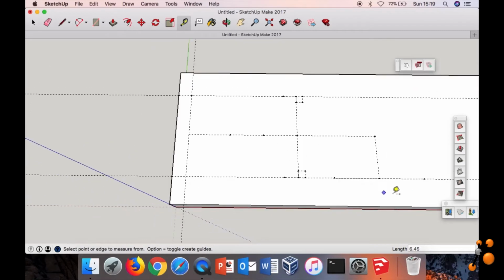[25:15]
So the capillaries maybe will come from down to up. And then at 90 degrees from here I need to put my detector. I don't know how I will put it, but let's think that maybe I will add a second lens to focalize. So maybe we should also think about this for the dimension. The length is 12.7, but we say that it is 12.9, and 12.9 divided by 2 is 6.45, and also from here 6.45. Then we have some idea of distance.
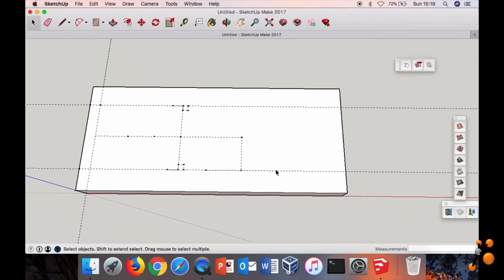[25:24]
I would like not to stop my device directly here, so maybe we should add a little bit of distance, like 3 millimeter. And then don't forget that we also have a thickness of the wall on this side. So we make it a little bit longer so we can put it until here. So let's put some line. The wall will be like this.
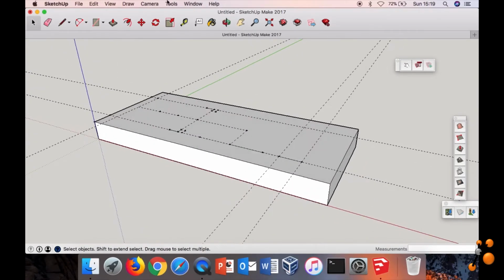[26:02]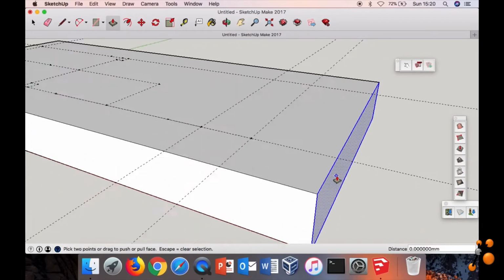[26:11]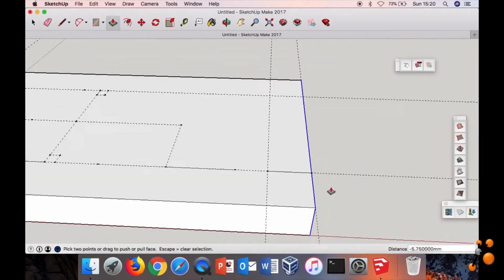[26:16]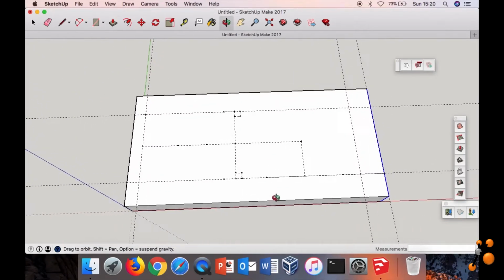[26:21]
Let's turn. We'll now adjust. First I have to select the face like this. Then we adjust this until this dot like this. Perfect. Okay, so now I'm going to extrude down to the top. So let's do it.
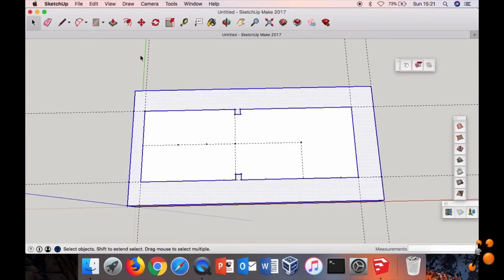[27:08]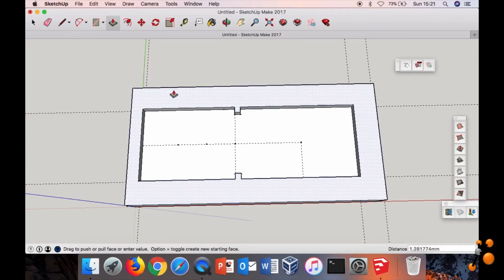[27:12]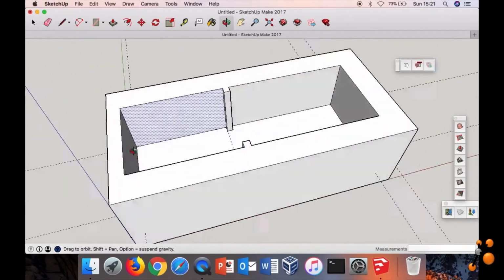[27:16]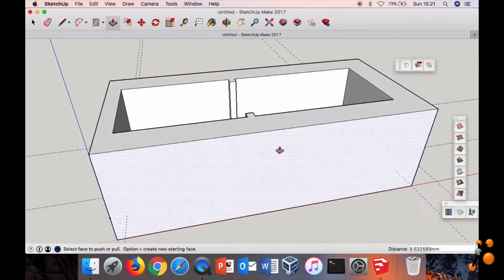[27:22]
So we draw it like this. Tack. Yes. So extrude. Oh, sorry. Then I have to select the surface that I would like to extrude. Does it change something? No, it's perfect. From this side is good. So I extrude, but until where?
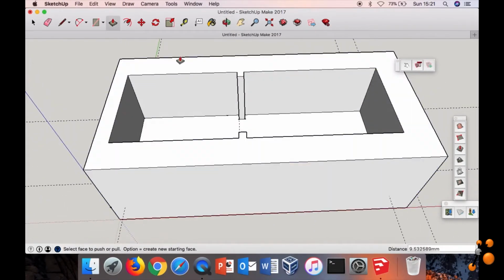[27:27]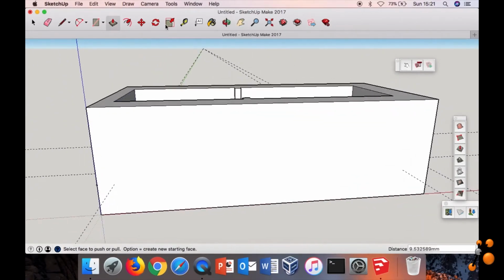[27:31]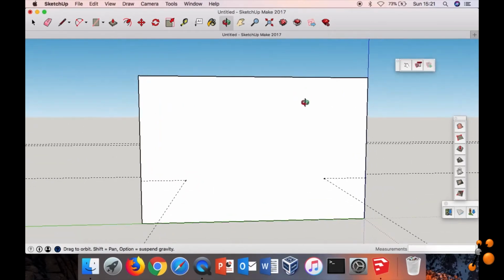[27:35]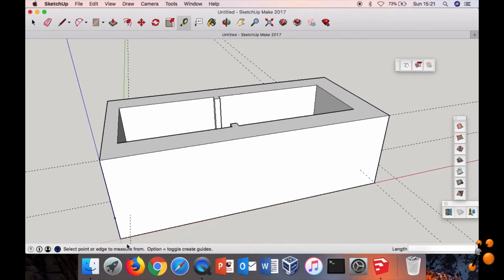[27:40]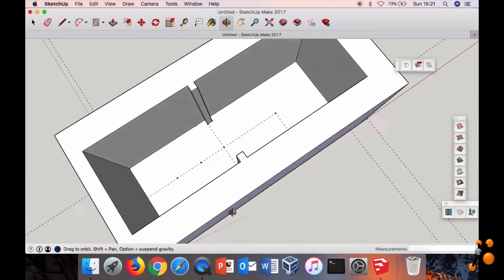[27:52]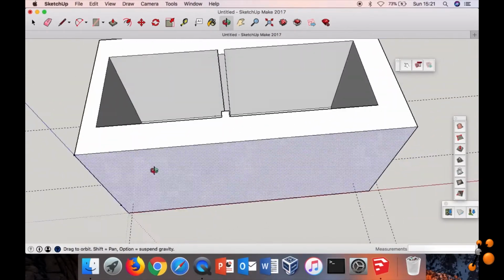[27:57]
Until the same distance. Here we say that it is 20.9, so I would like to put the same distance on the top, like from this face it will be a square. So I have to put from here to here 20.9. Okay, so I'm a bit too low. Select this surface and go to this point. Perfect. Okay, let's start to look at something.
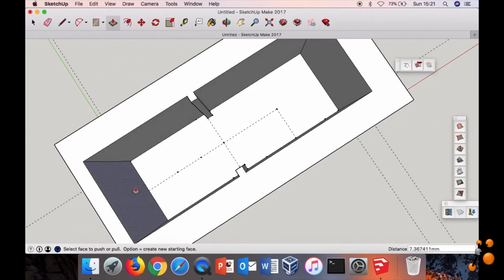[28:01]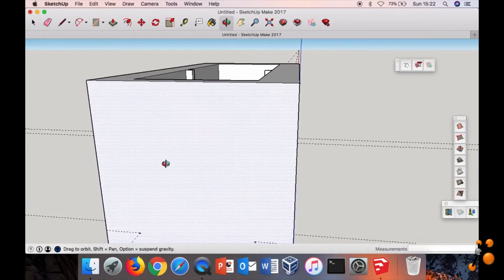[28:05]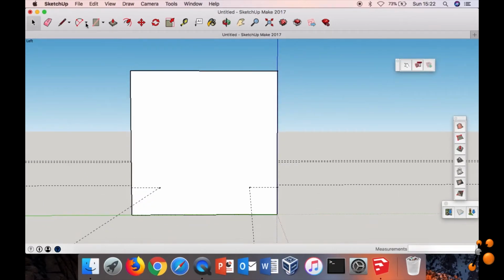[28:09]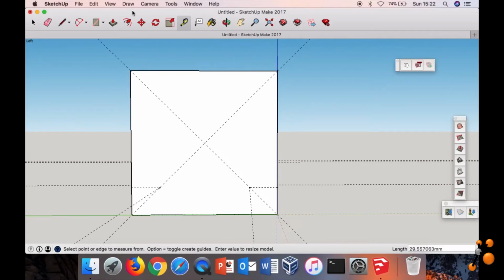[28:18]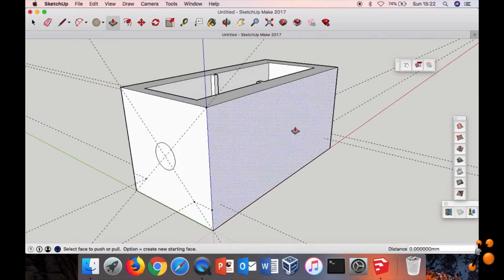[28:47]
So imagine we will add the lens here, and now I need to put the LED hole because I want to insert from this side. Again I need to know the middle, so diagonal like this. Here I should draw a circle. We know that the real inner diameter of the LED is 4.8. However, because of the resolution of the printer, let's put 5. So 5 means that the radius is 2.5. Enter.
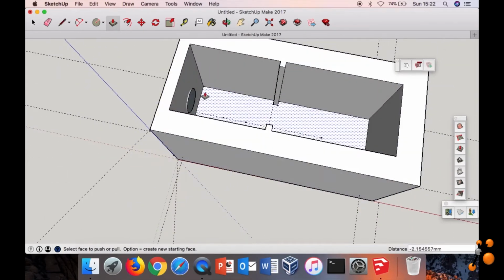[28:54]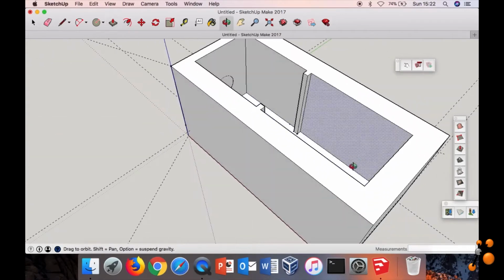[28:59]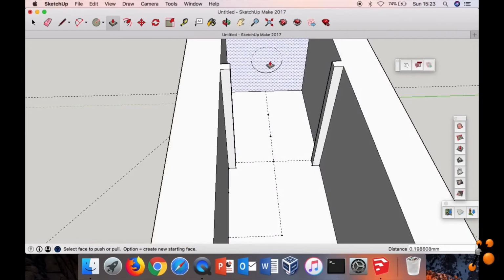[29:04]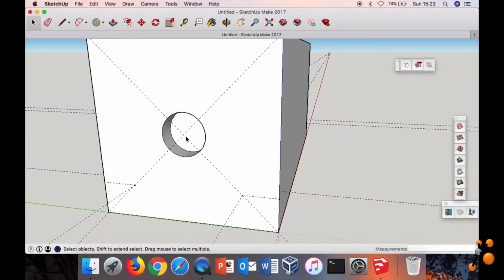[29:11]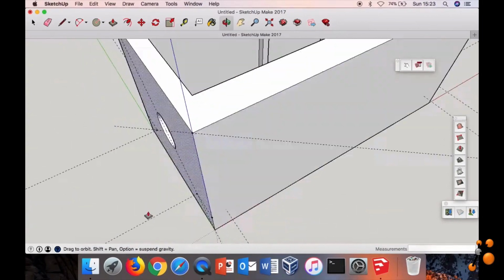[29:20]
Okay, let's remove this piece. Okay. Okay, thank you. Why doesn't it work? Okay. Okay, now it's good.
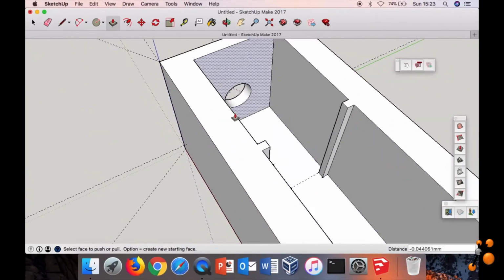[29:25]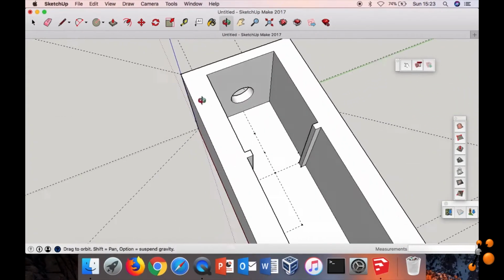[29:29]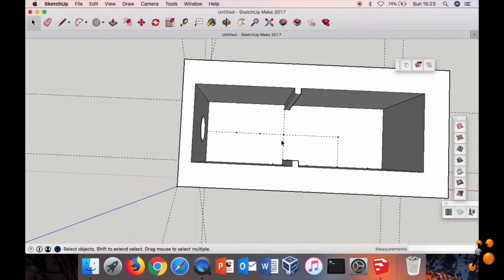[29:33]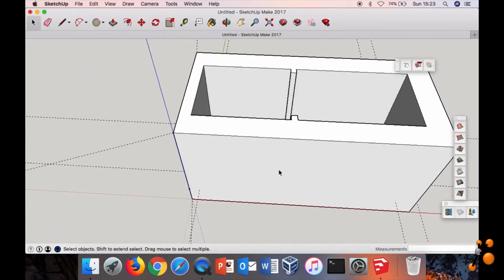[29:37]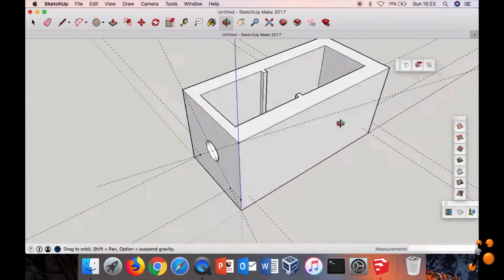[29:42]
So here you see clearly the hole where we will insert the LED from here, and then here we put the lens. So I think we are now quite good according to the 2D plan that we did, and now we have a 3D object. Looks great. And this 3D object I would like to print and to test.
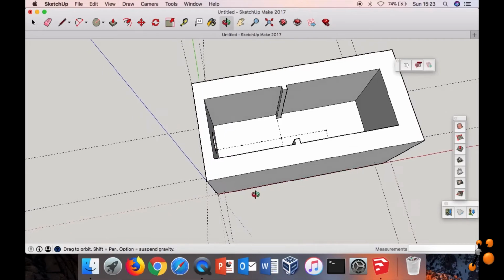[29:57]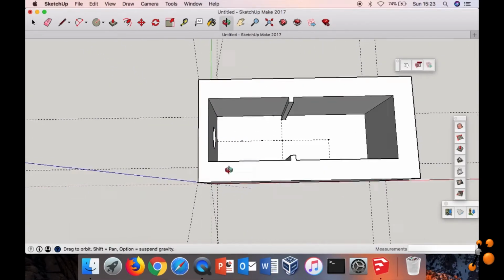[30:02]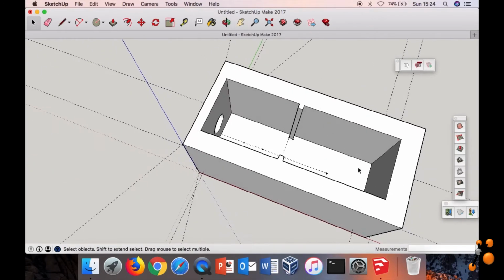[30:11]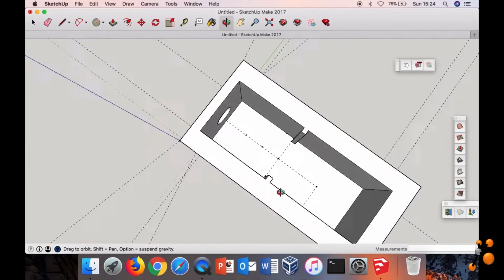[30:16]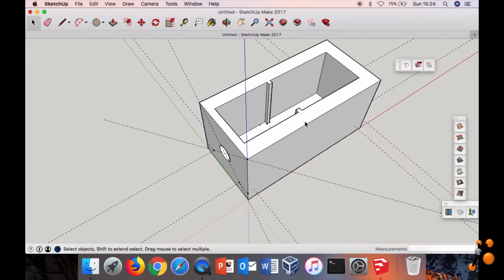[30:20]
I will also take, maybe not the LED that I ordered, which are relatively powerful, but we start with a basic LED. Anyway, I just need light, so I will put it here. Also, I will measure the dimensions to see if it's correct, place the lens, and then test it with maybe a piece of paper, to see if it's really 11.6 or not. Okay, so let's save it in STL and let's go print it.
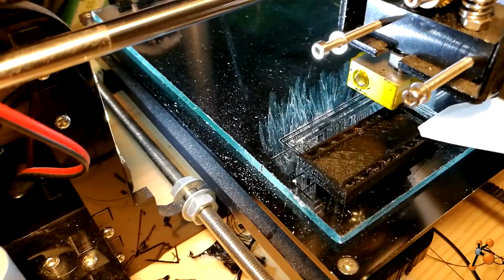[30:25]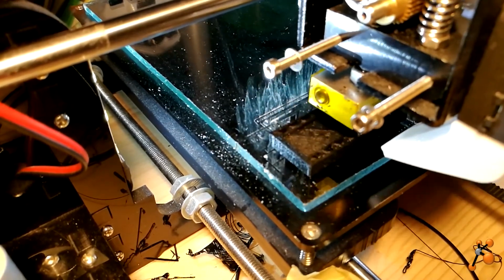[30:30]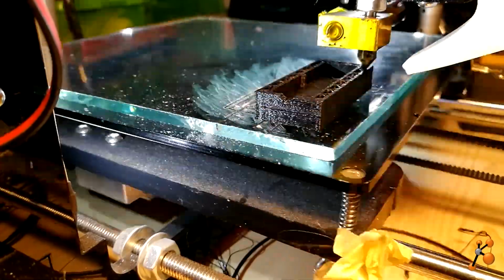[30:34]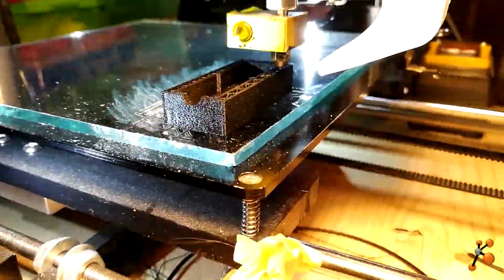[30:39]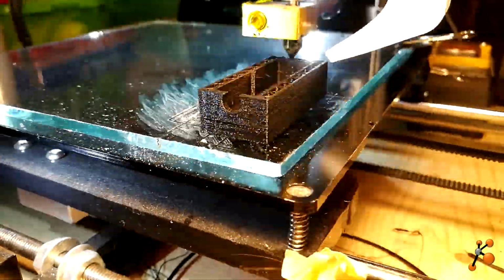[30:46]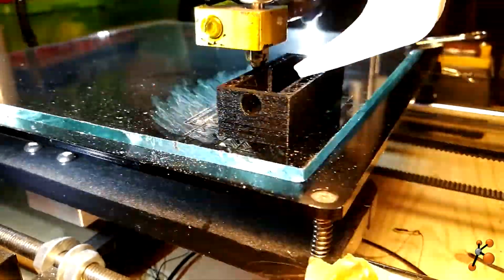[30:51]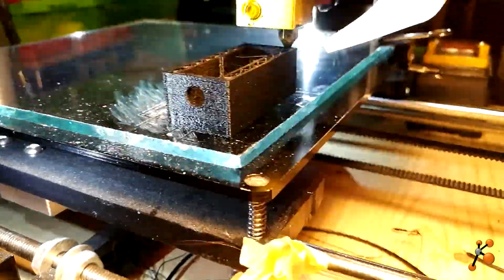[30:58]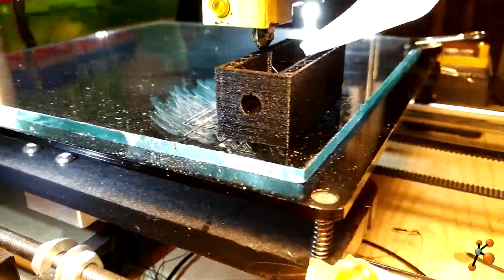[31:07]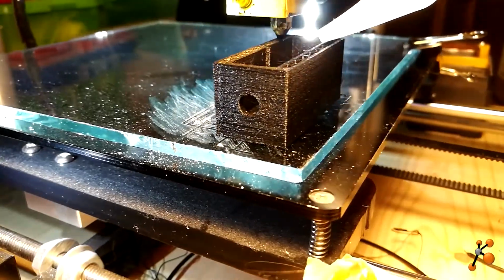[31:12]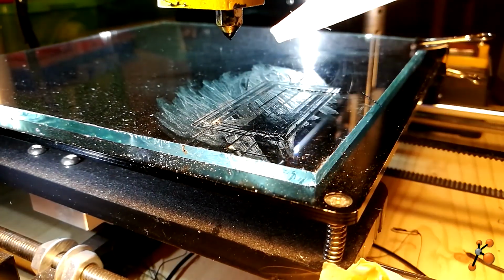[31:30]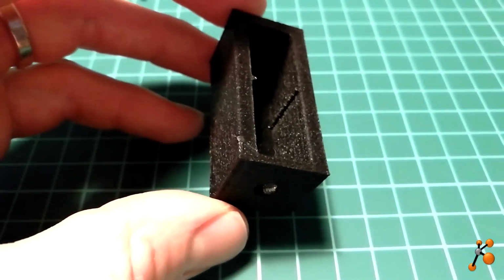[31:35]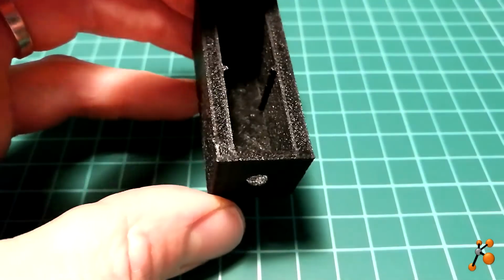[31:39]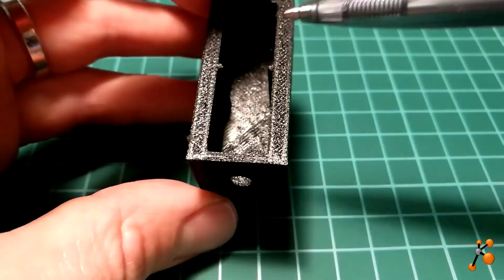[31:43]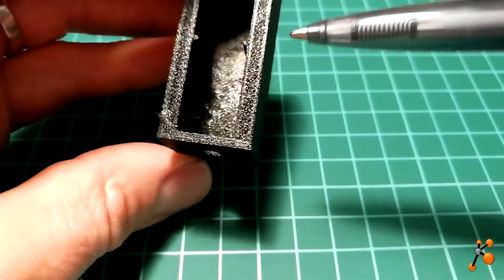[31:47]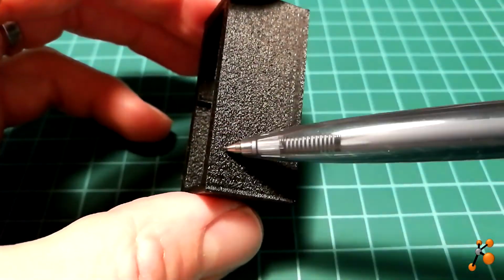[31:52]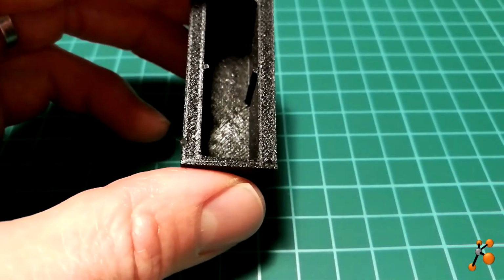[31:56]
So here is the object that we just printed, and as you can see inside we have the part to block our lens. Here we have the hole for the LEDs. It looks quite nice, and the resolution looks like quite good quality. I would like to check how accurate it is.
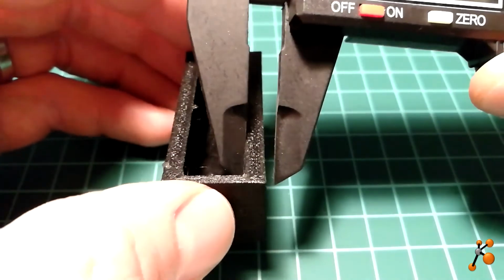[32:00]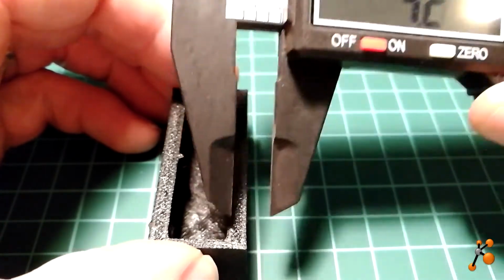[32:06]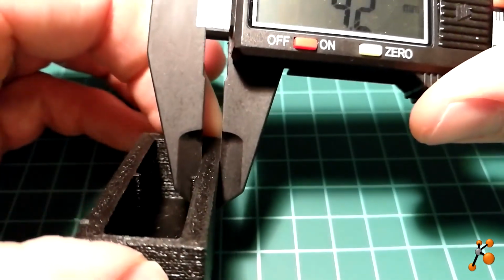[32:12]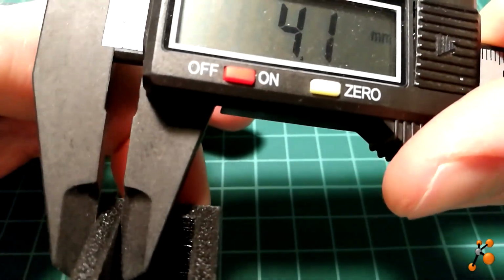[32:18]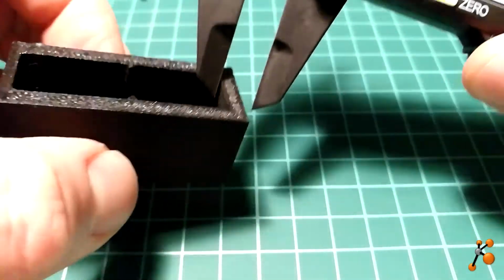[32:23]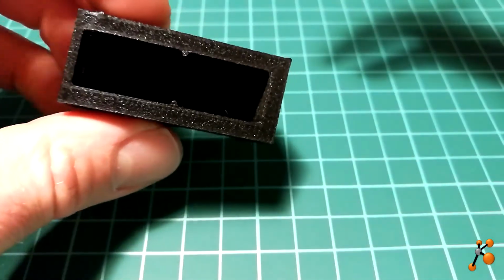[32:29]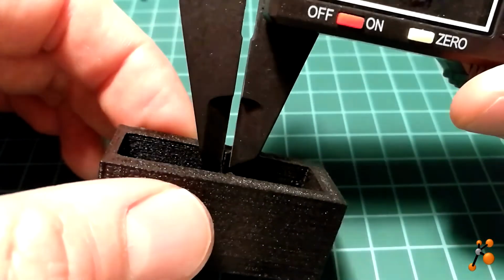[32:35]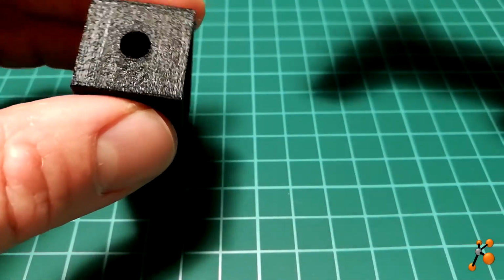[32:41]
So now, let's put it properly. Here we should have 4, and we have 4.1, and here 4.1, and on the back 4.1 exactly. So 0.1 is not so bad, the difference. Here we should have 1 millimeter, we have 1.2, and 1.2 also here. You see it's between 0.1 and 0.2.
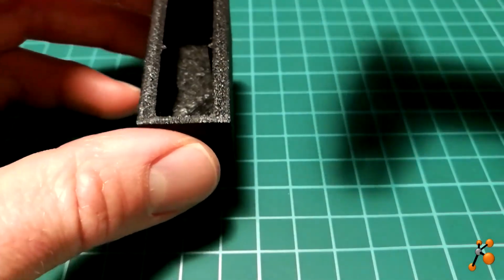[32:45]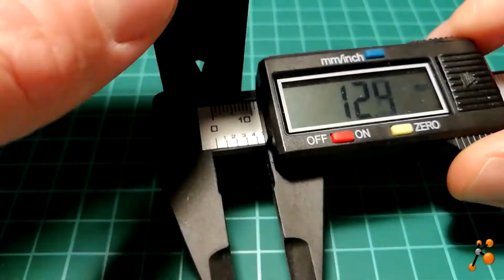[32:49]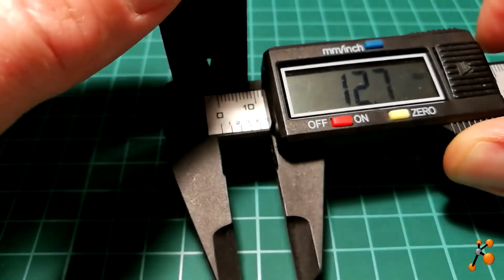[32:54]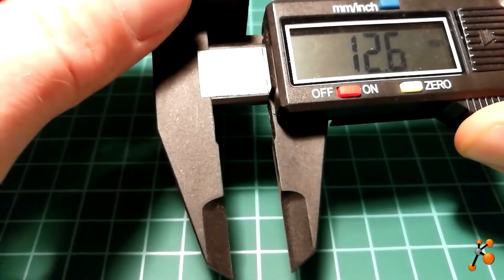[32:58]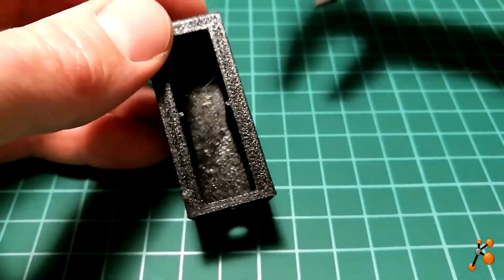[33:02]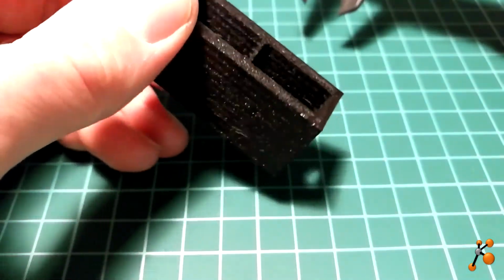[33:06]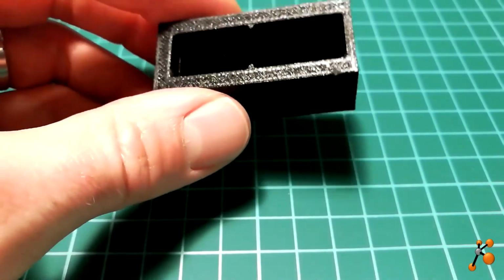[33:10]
Concerning the inside, we should have 12.9, but we have 12.7, so this is good because it's exactly the diameter. 12.7, yes, 12.7 on both sides, so it's exactly the diameter of our lens, so it should work. Okay, so now I would like to test my prototype.
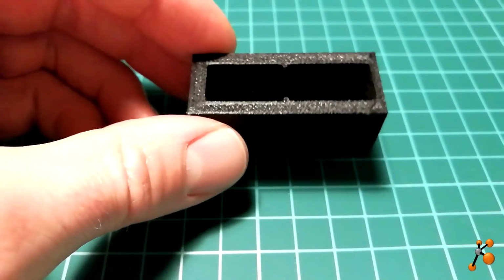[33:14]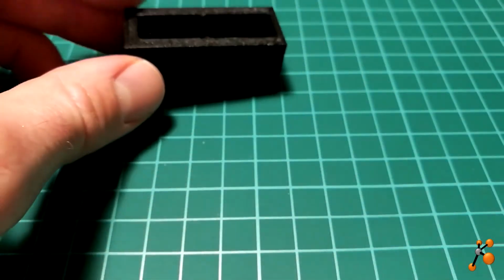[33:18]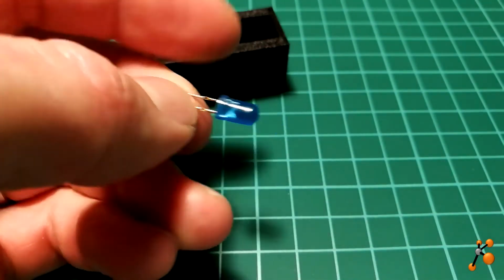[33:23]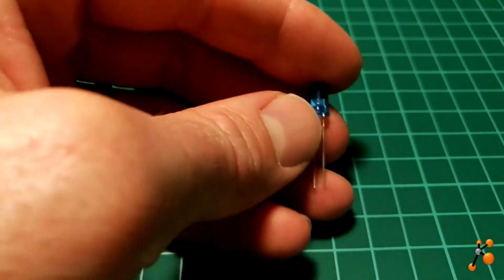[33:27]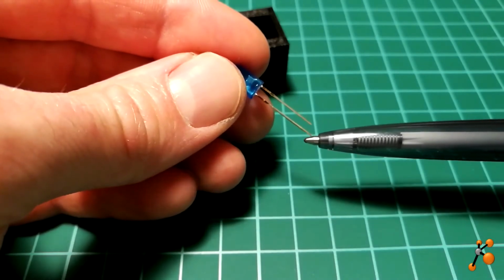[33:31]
To test it I don't want to use my expensive LEDs. I would like to use a basic LED, 5mm diameter. The LED is a light emitting diode. There is a plus and a minus, you have to be careful. The plus is here, it's called the anode, and this is the minus, the cathode.
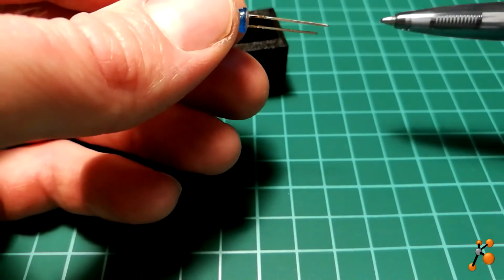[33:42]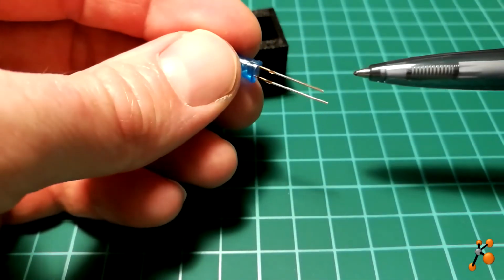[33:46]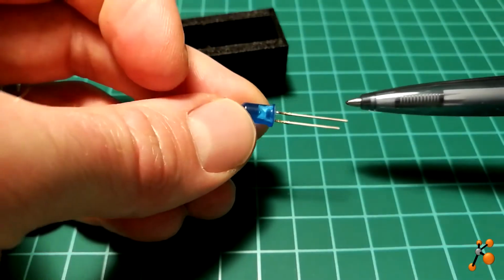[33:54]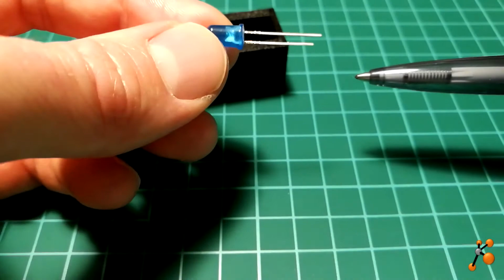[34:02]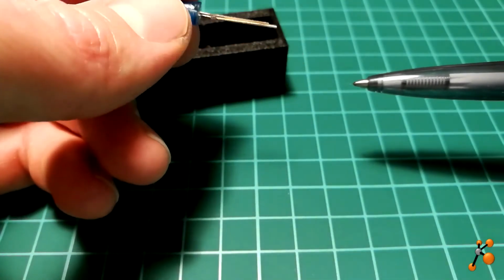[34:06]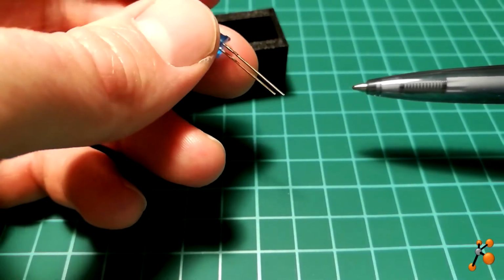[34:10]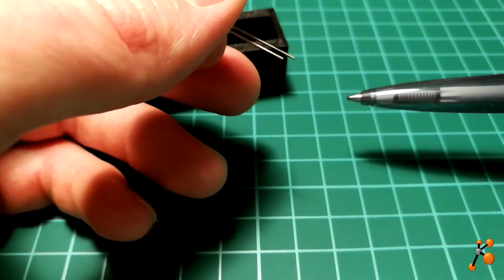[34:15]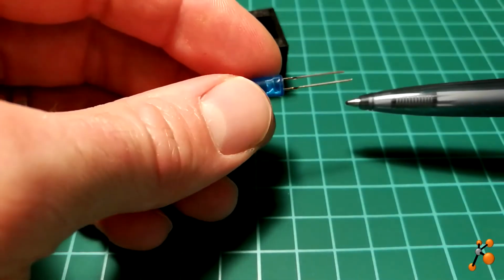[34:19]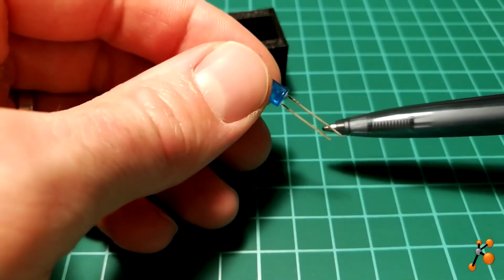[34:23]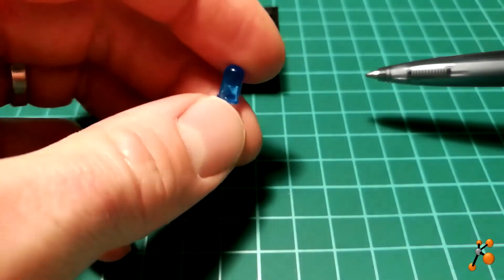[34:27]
Usually LEDs work with around 4.5 volt, but the most important thing is the current. So you have to use a resistor to limit the current of the LED. The maximal current is usually around 20 milliamp. To run your LED properly and carefully, you should run between 9-10 milliamp, and usually people use a resistor around 330 ohm. But today I'm going to use a power supply with 5 volt, so let's make some calculation.
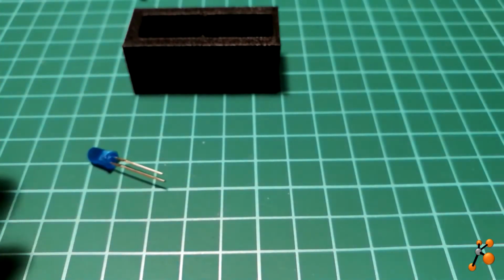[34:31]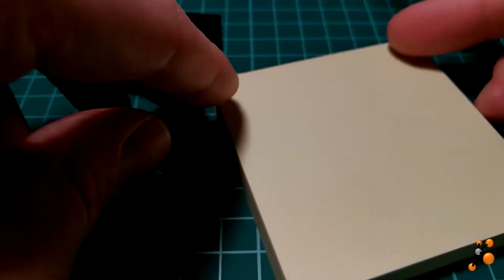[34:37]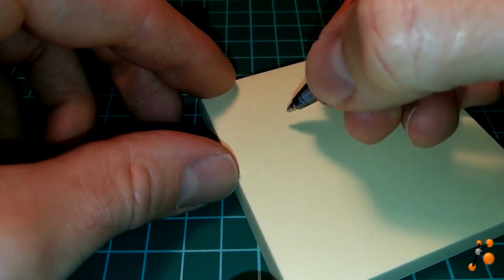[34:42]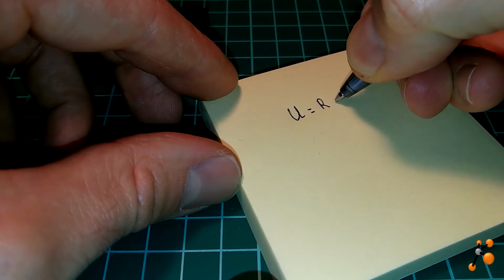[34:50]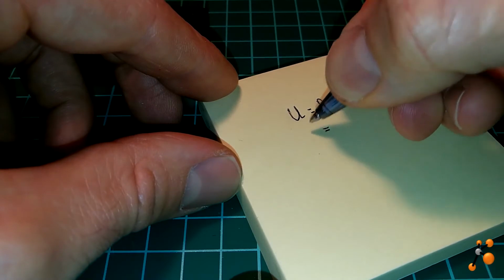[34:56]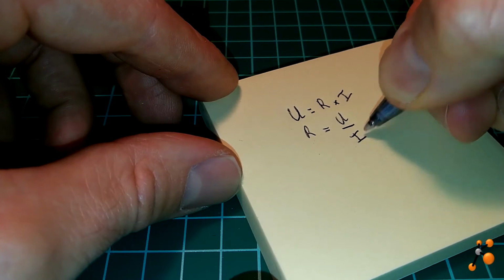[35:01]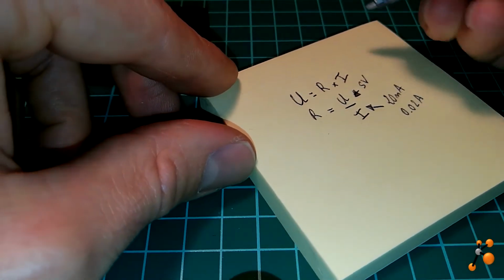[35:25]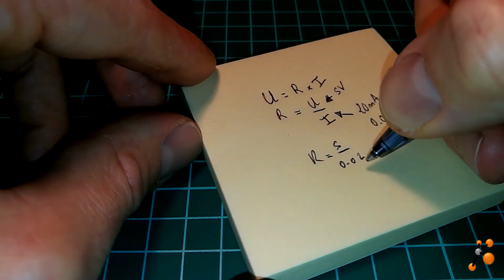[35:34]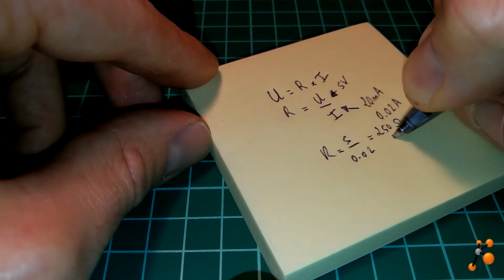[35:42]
If I want to push the system, we have Ohm's law, which is the voltage equals the resistance multiplied by the current. Then if I want to know the resistance, it's the voltage divided by the current. The voltage is in volt and the current is in amps. Here we have 5 volt, and let's push the system to 20 milliamp, which corresponds to 0.02 amp. So the resistance is 5 divided by 0.02, which is equal to 250 ohm. I don't have 250 ohm. Let's check. No, I have 220 ohm. Okay, so we are going to use this.
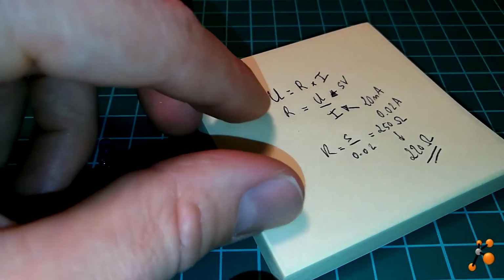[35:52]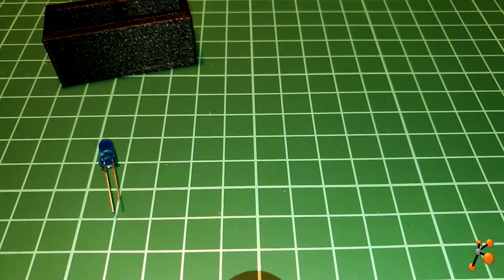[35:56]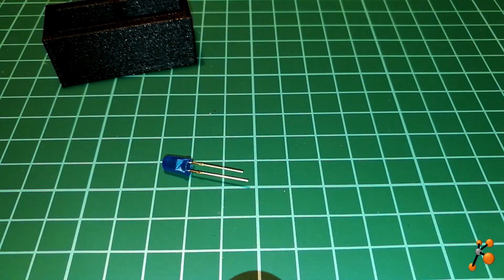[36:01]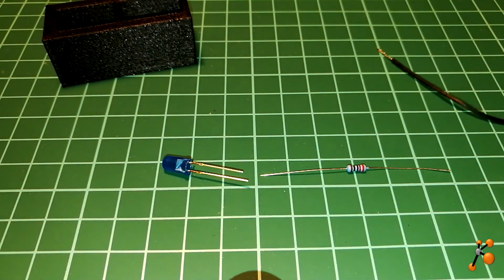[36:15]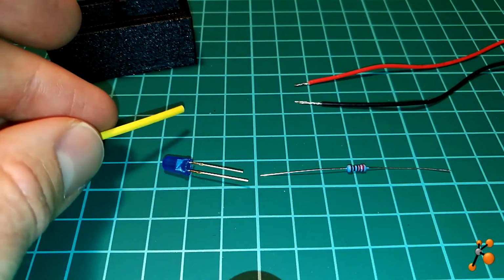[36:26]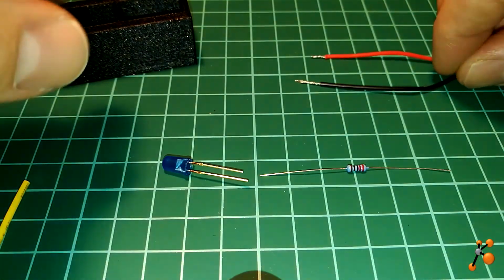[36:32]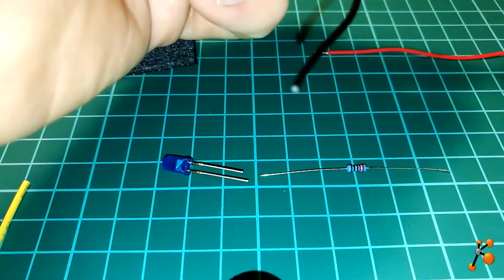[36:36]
So let's see now. I have this, let's take the resistance. Be careful, it's important to check the cathode and anode, so make it properly. Usually we use black for the minus, for the ground, and red for the positive. I would also like to use some shrinkable tube. And let's make some soldering. Let's cut a little bit of this.
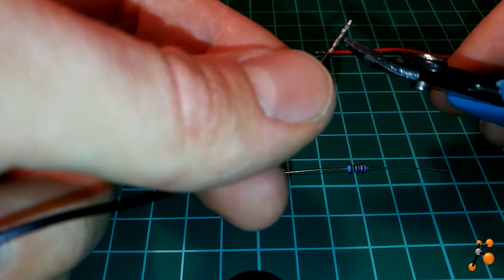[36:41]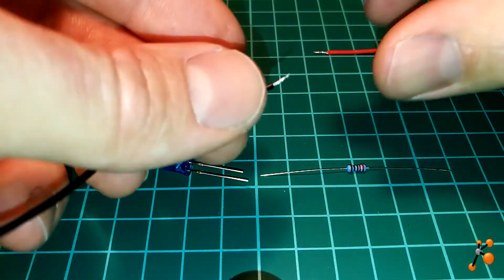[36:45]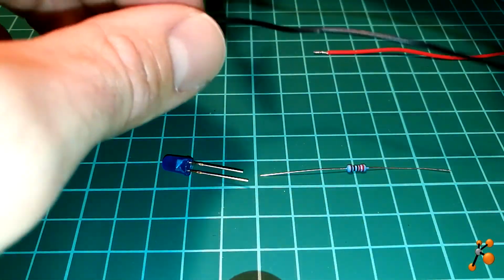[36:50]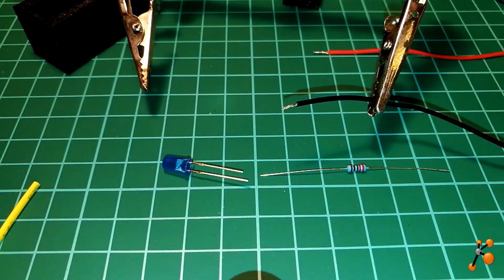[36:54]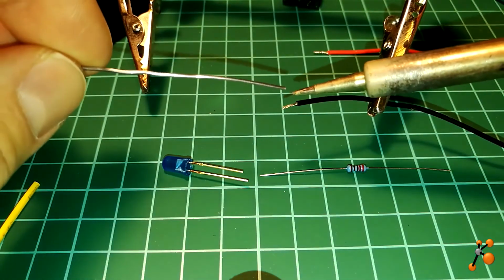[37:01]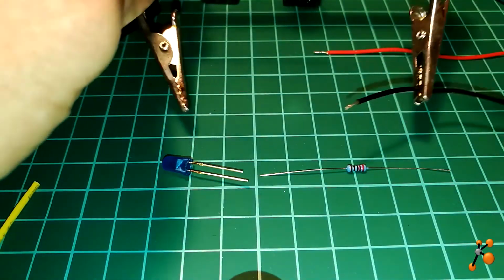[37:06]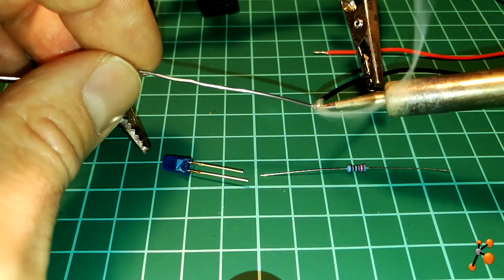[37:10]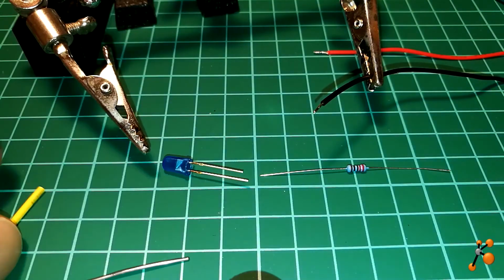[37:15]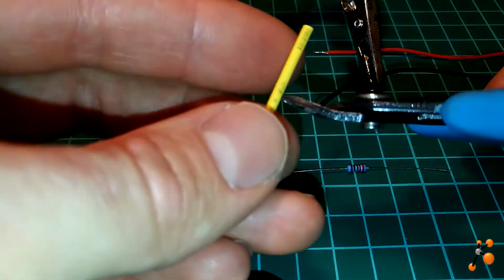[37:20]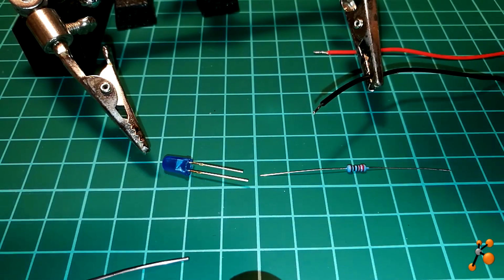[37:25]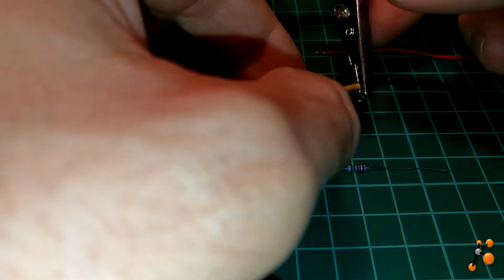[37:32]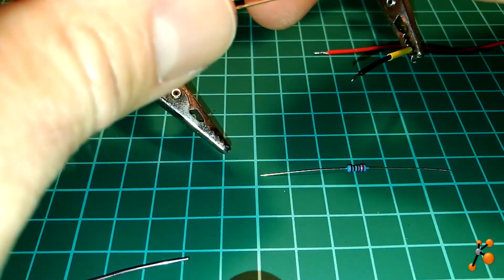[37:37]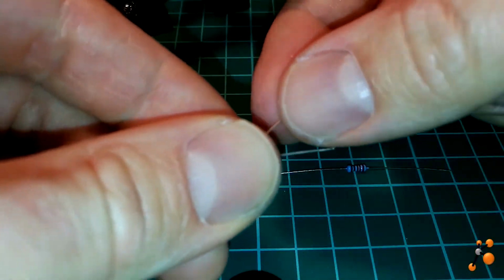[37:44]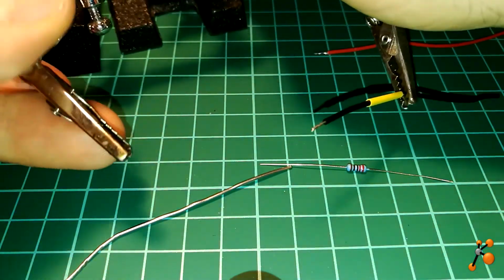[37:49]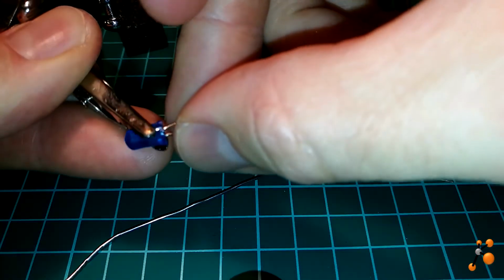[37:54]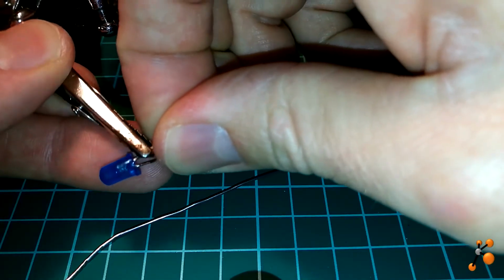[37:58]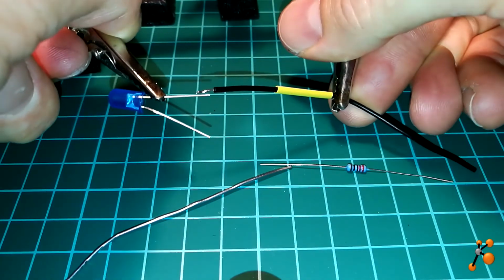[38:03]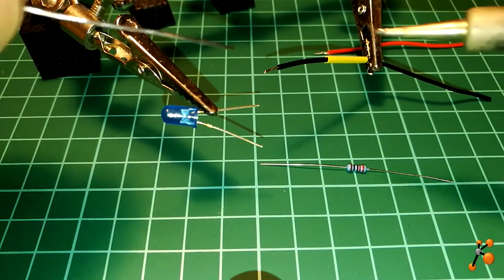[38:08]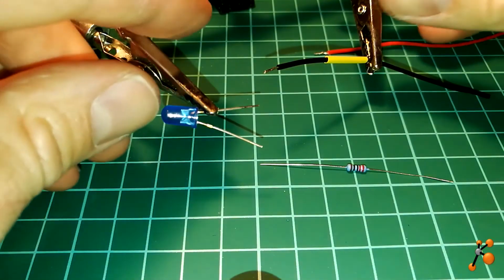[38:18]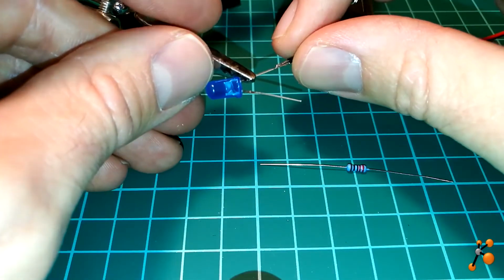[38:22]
You always have to prepare the wiring, the wire. Okay, let's cut a piece of this. So the minus, I will protect this. Let's keep it far, because if it's heating, then it will collapse. The positive is the longer one. Let's bend a little bit. It's really not a super important LED. Tinning the ends is always good. I also have to put a little bit of solder here. Don't heat the LED too much, it's not good. So now we put it together properly.
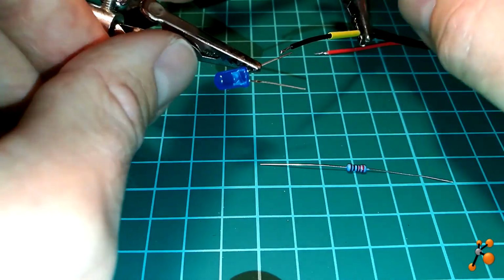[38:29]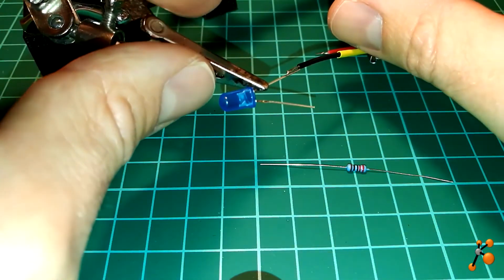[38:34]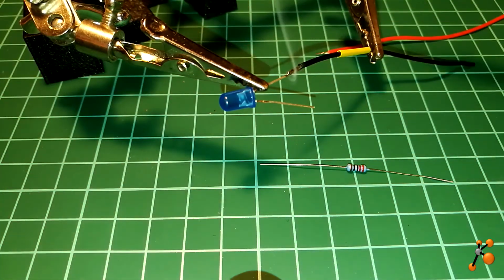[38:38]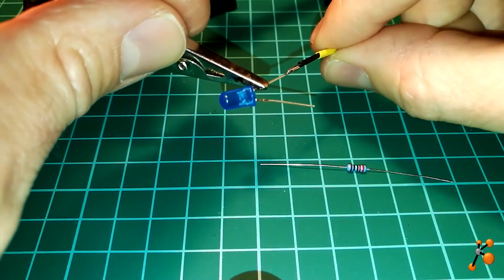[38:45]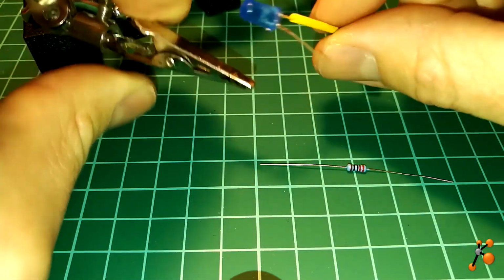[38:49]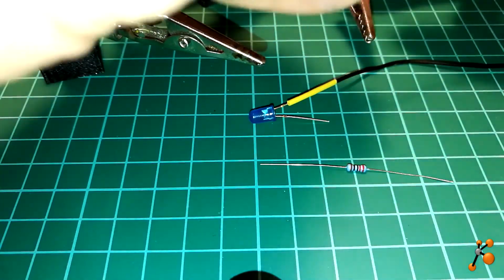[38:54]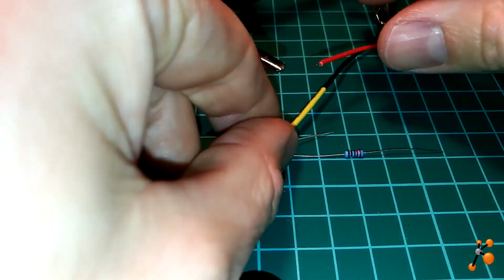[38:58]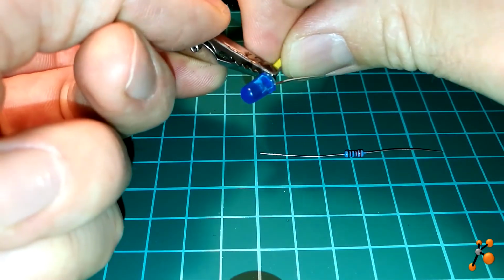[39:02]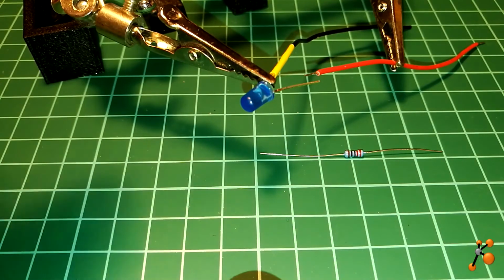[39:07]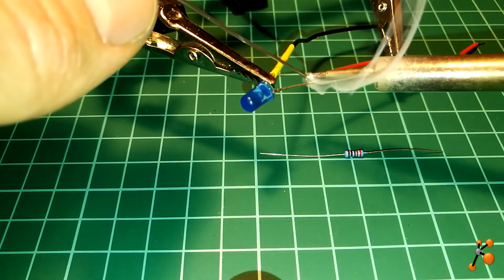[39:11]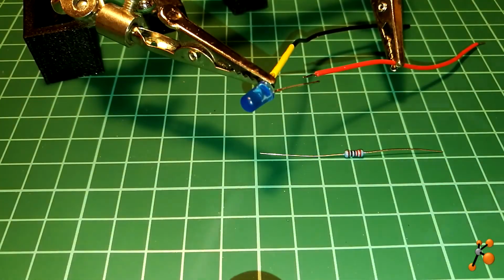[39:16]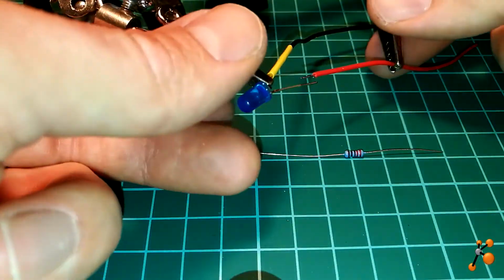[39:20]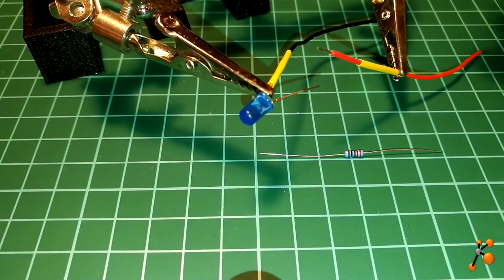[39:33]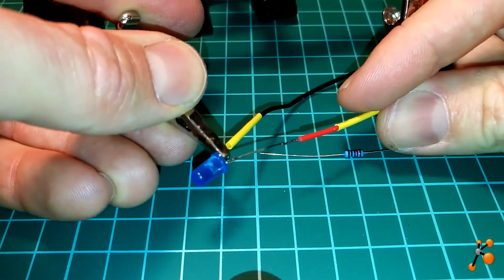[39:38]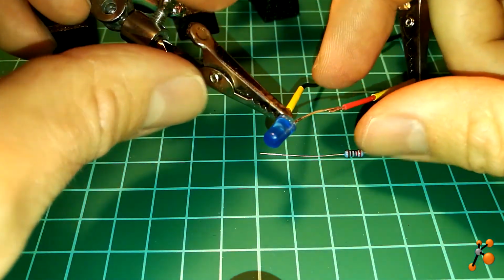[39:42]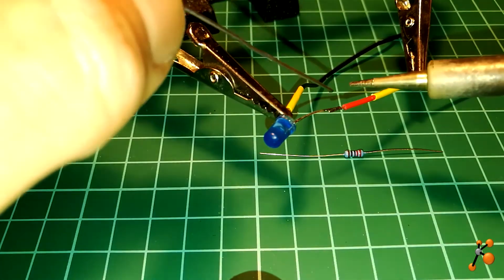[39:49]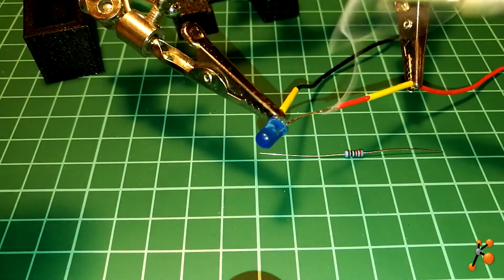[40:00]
Like this. Perfect. Then we do the same for this one. Oh, don't forget to put the sheath up. It's not necessary, but it's better, because imagine you bend a little bit, then the plus and minus touch, so just to make it properly. You know, soldering is not really difficult. The most important part is always to prepare your soldering. That's it.
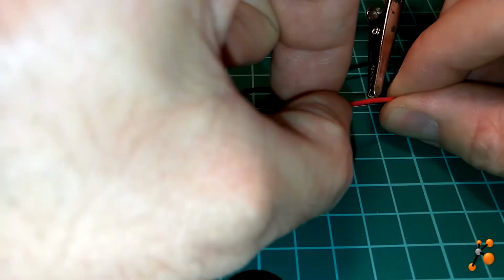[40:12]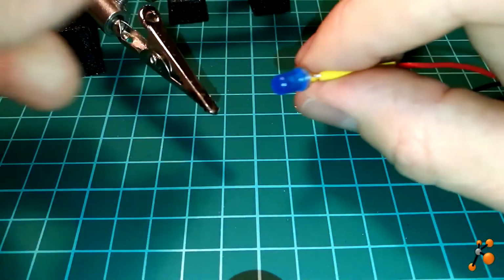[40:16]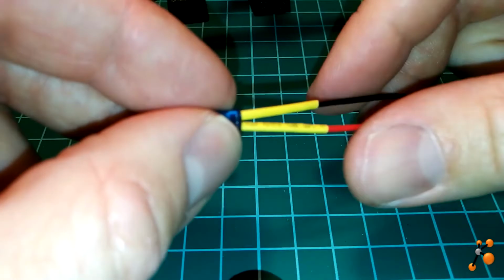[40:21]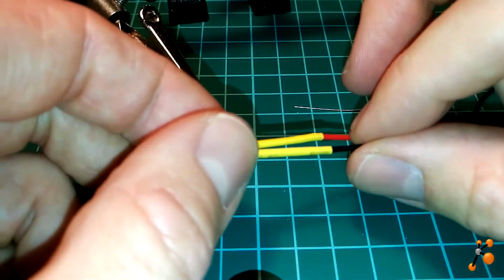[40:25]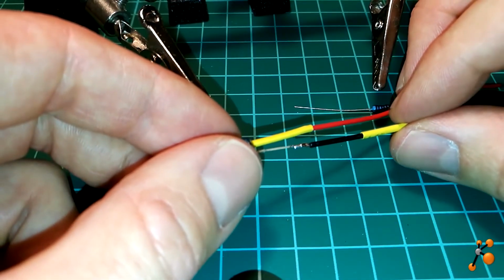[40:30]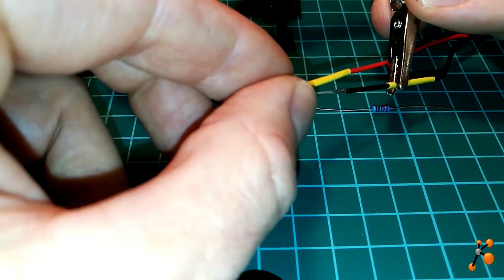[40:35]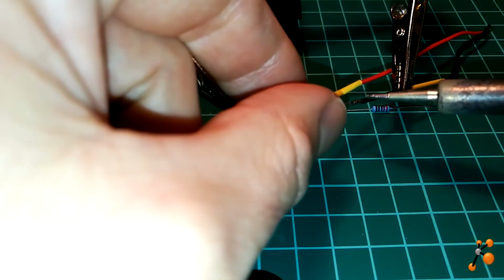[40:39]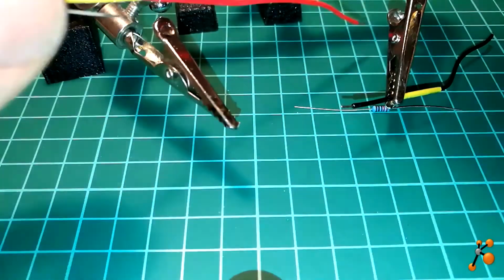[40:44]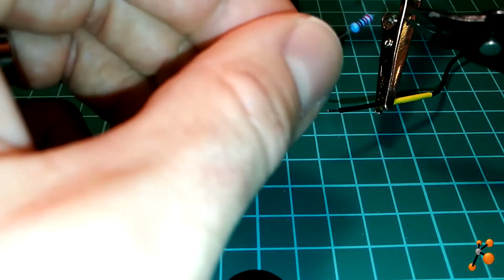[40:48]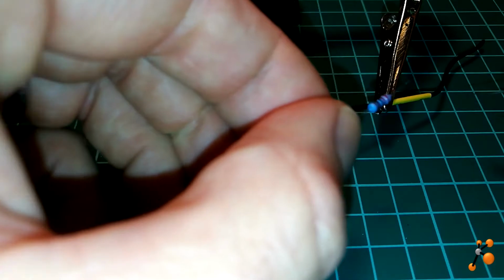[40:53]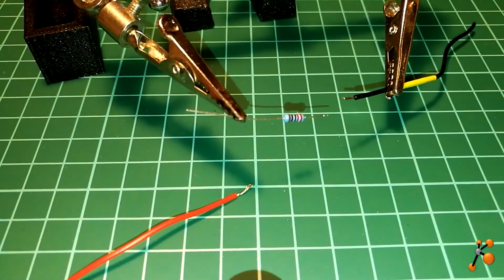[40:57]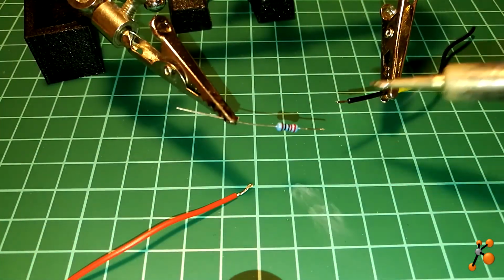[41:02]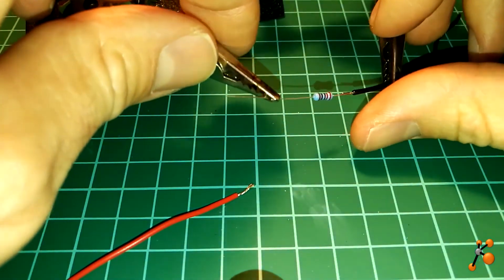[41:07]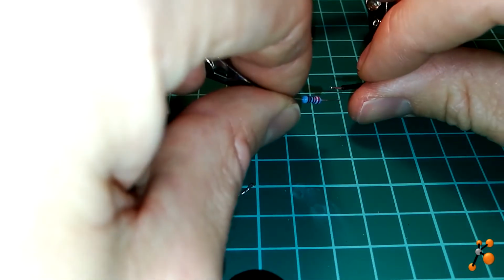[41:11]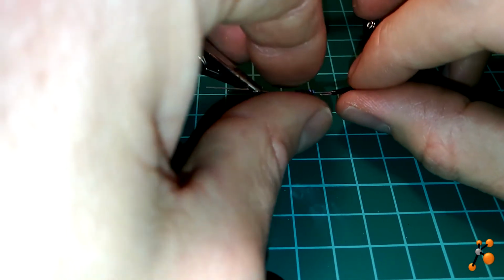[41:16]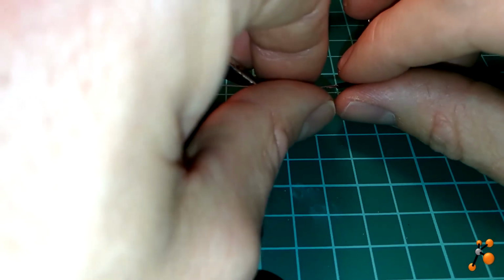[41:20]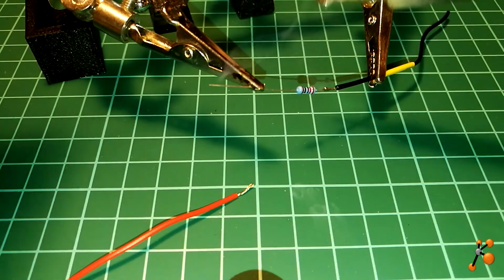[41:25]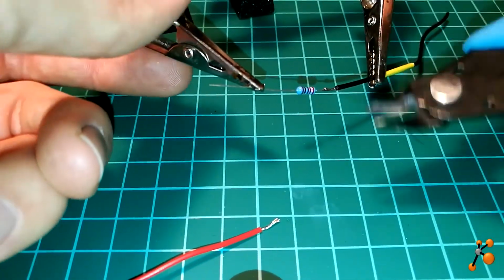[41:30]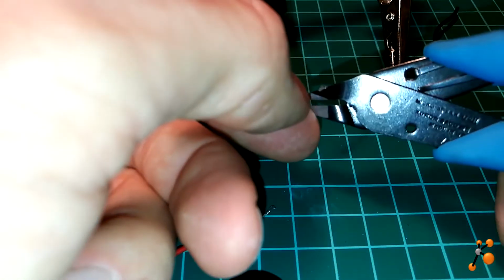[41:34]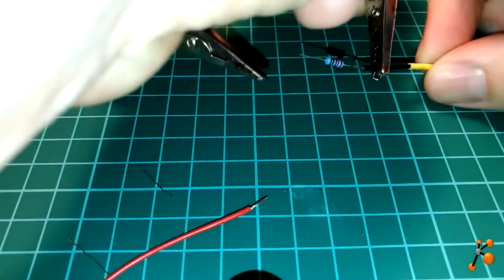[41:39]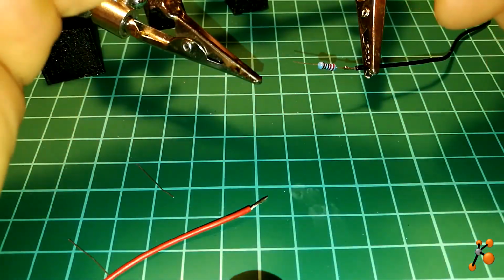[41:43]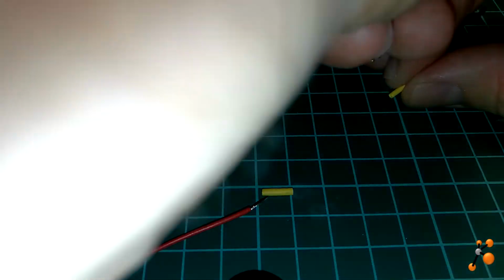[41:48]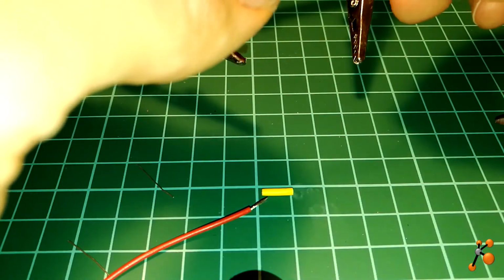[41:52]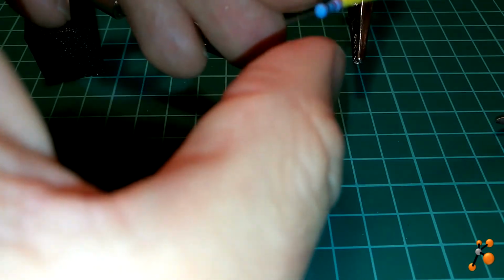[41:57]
Okay. So now I have the LED with the wire. Oh, one thing I forgot is to add the resistance. I'm really stupid. It's not good, let's remove it. It's not easy with the camera close to me. Then maybe what I could do is take half of this and put it here. Yes, now it's better.
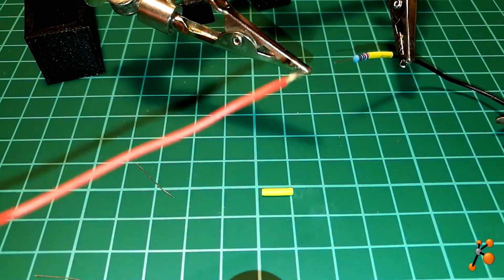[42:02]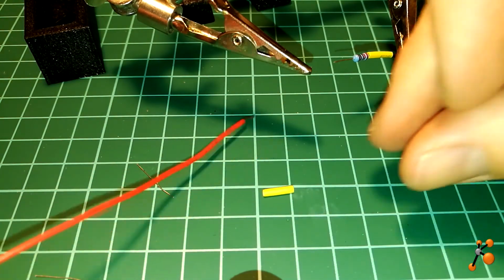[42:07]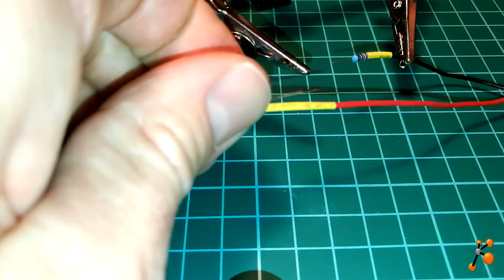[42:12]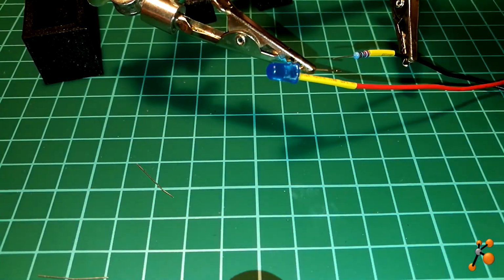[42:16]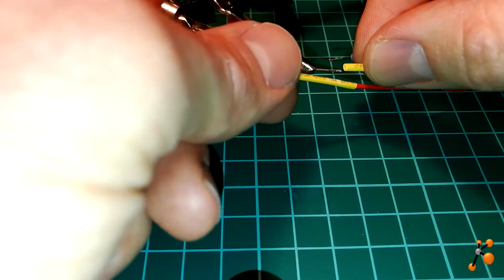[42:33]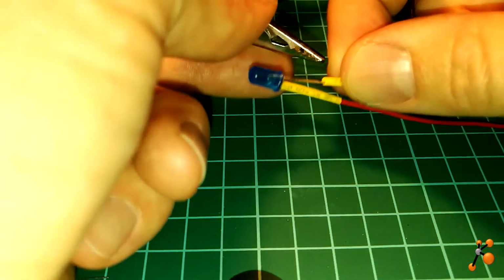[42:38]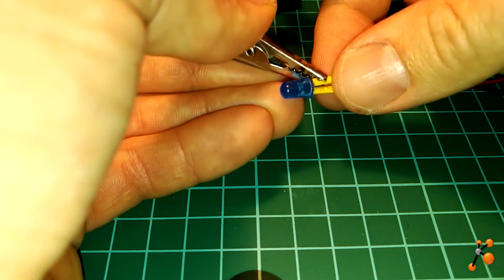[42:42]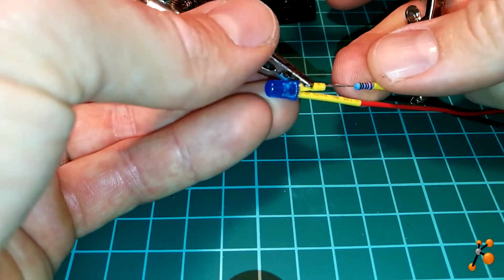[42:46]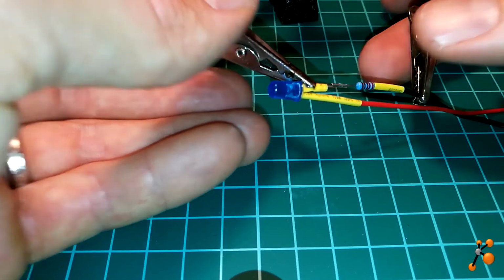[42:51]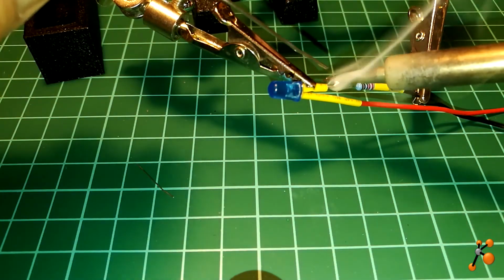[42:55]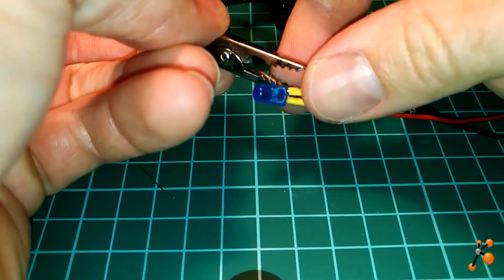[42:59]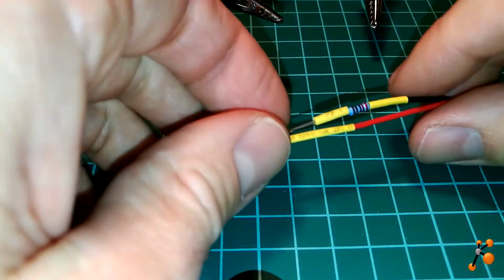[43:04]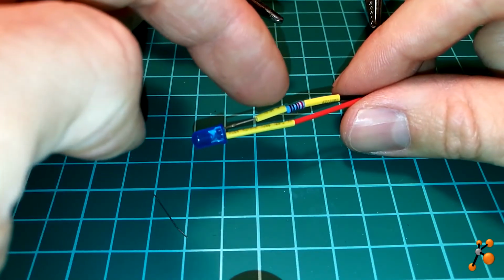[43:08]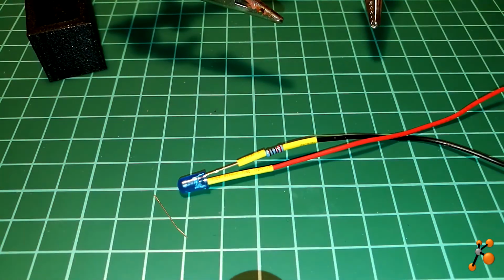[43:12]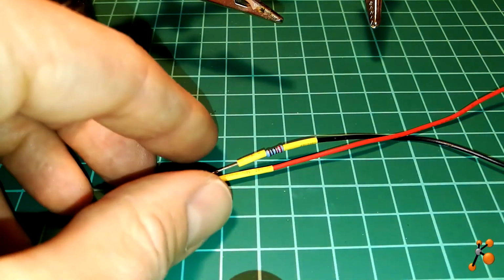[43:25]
So I think it's not necessary to add this one, but let's put it. If you already protect one, it's okay, but let's do it like this. That's it. So now the resistance: you don't necessarily have to put the resistance on the positive or negative, it just needs to be in the circuit. So now let's put 230 degrees.
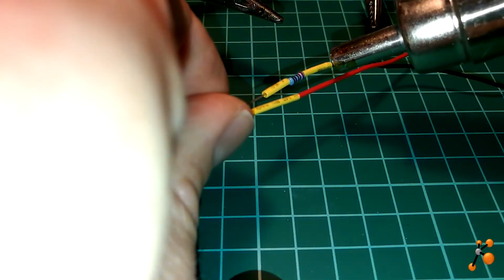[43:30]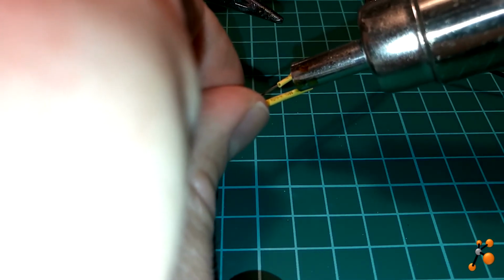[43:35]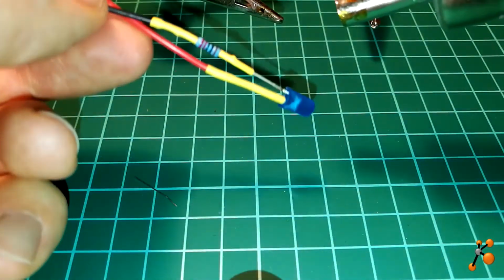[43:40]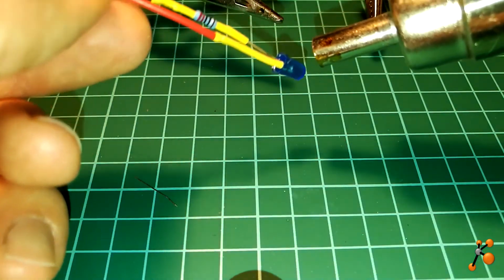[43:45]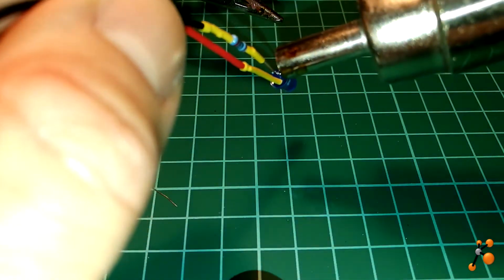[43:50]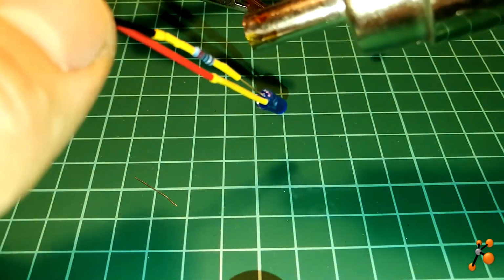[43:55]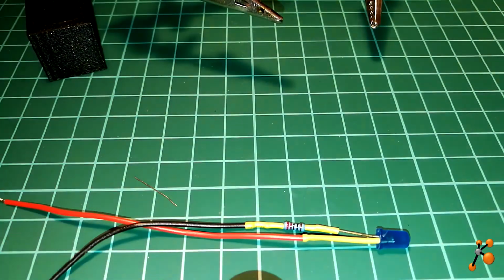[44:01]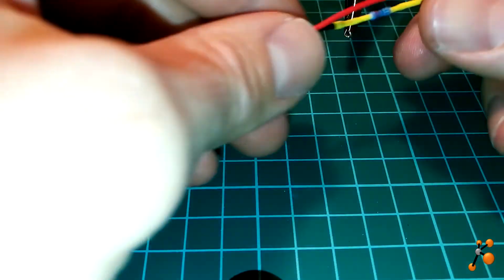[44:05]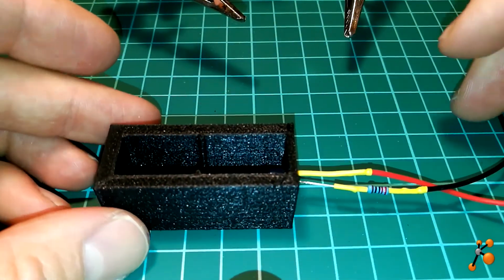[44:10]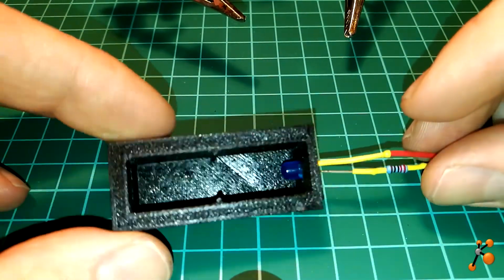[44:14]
Okay, so now I think I will cut the video and just prepare everything to test the device. So I connect everything now. The LED is connected to my power supply where I can regulate the voltage. I will increase the voltage slowly, just to show how much power we have and from which voltage we start to have some light.
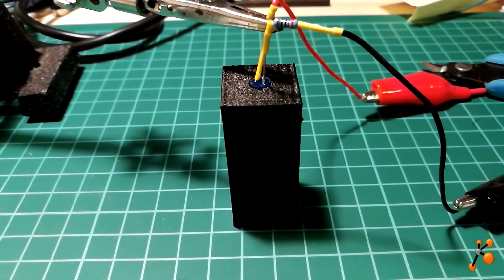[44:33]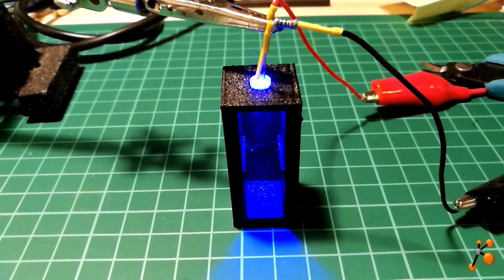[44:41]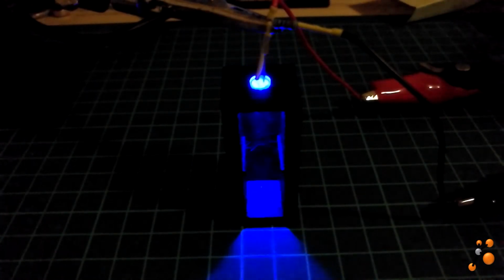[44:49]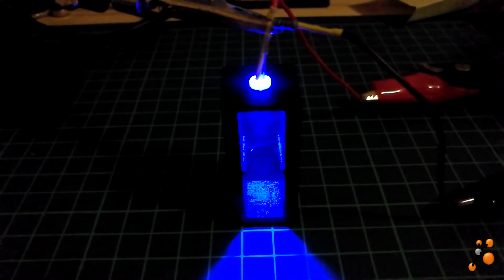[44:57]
So now I am at 2.5, we start to have something. So you see that now I am at 3, 4. Let's remove the light. So it's quite nice, huh? So here I am at 2.5 until 4. Yes, I am at 4, so it's quite strong light, even with a cheap small LED.
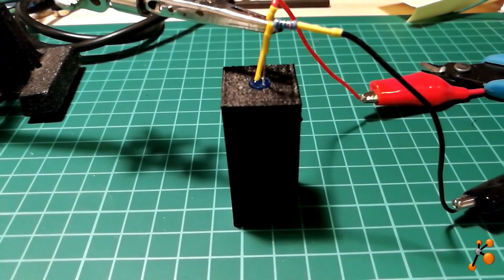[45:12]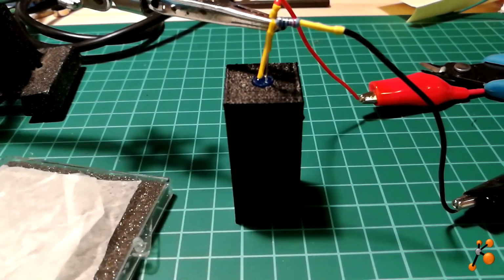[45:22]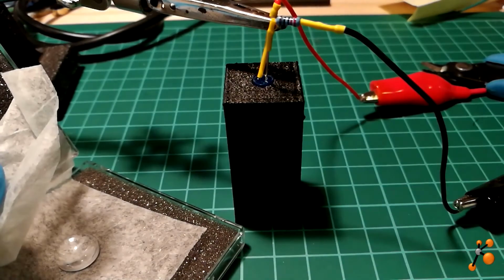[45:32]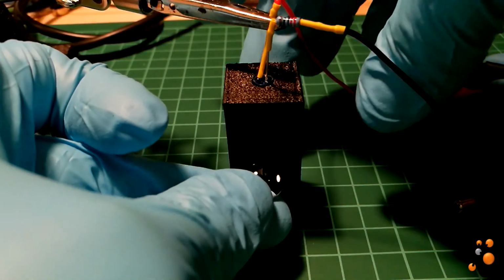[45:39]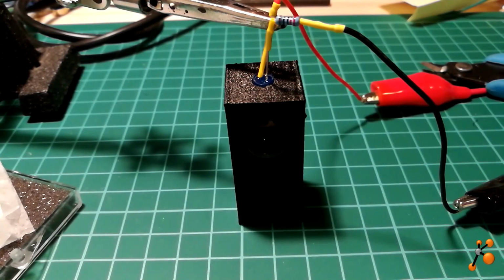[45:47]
Okay, so now we would like to add the lens. So the lens, as I told you, came in a special box with protection. I'm wearing gloves now to take out this lens, which is here, exactly in the corner. I will take it and place it on my system, on the back here. Okay, so now it's in place.
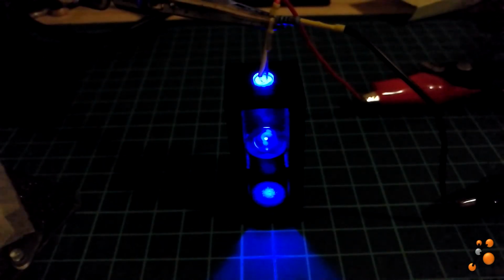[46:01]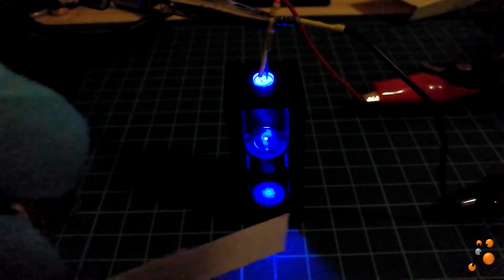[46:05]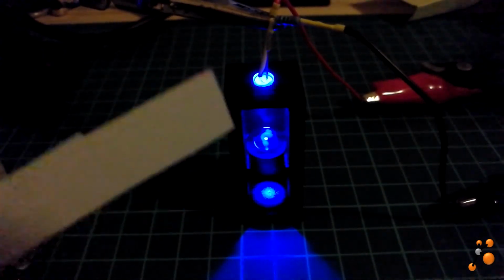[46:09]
Let's increase, and we have now 2.5. So you see we have a ring. The light is really focused compared to what I presented before. Let's shut down. Quite focused. We still have some dispersion of light here, but this is normal, because it's an open system. However, we are really looking for what is going on in
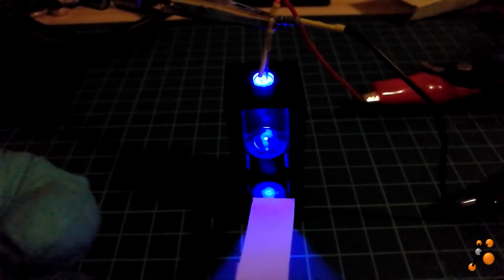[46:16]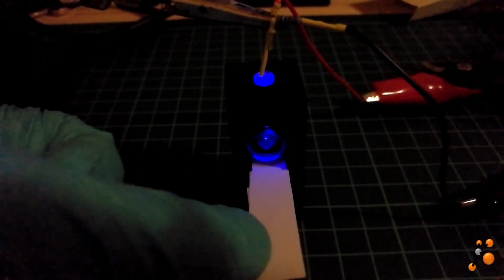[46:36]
the back here. Okay, so I will put a paper, and for this paper, I will just reduce the light a little bit like this. Then we have less perturbation. So I will just put the paper here to see where my back focal point is. So I'm going down, down, down. The ring is a little bit reduced, but it's not really small. You see that you have a focus ring, but I still have some light. You have two rings, one in the middle which is focused, the other one is not, it's low intensity.
It's difficult to see; by eye it's better, we really see better focus compared to when you see it with the camera. And here I am now on the back. So yeah, it's big, large, and now it's focused. Yeah, we see, and here I should be around 1 centimeter. But it's not exactly what I expected. Honestly, I really expected something focused on one dot, like maximum 3 micrometers, you know. But yes, well, it's like this.
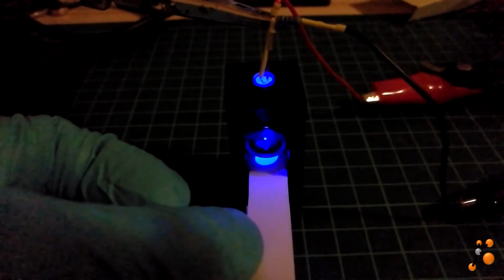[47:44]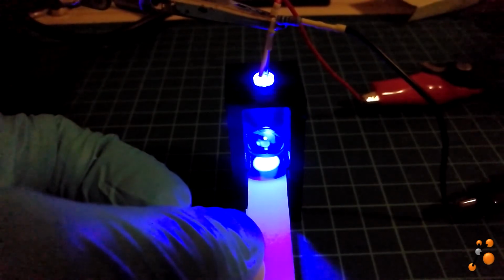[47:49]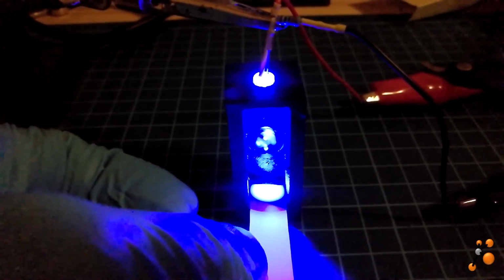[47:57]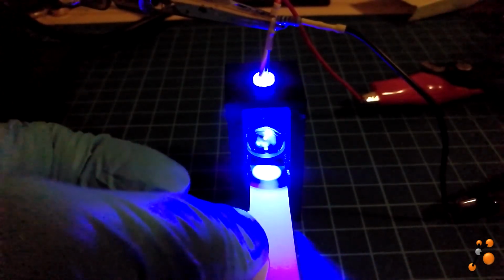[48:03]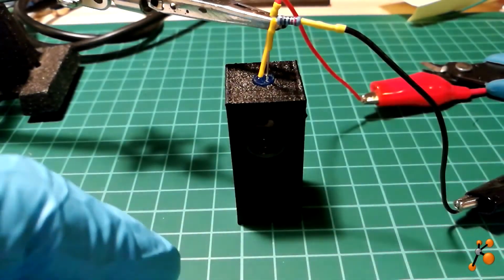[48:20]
Let's put maybe a little bit more power. And now I am at 4 volt. So it's really strong, but it's quite a large spot. Yeah, there is something, but it's not really focused as I expected. Okay, let's put back the light. We can see that the LED is working. Huh? The LED is working.
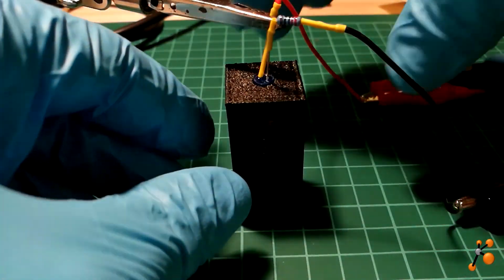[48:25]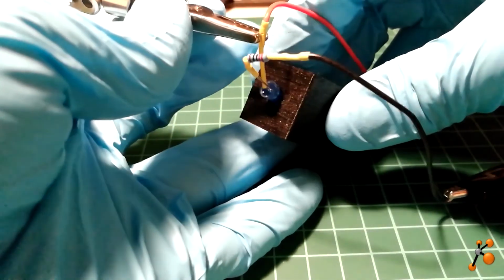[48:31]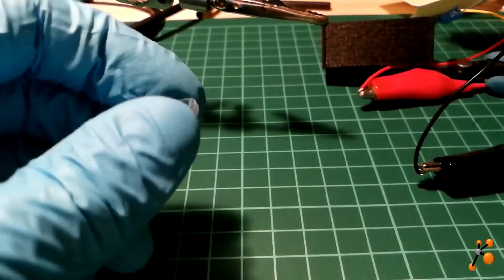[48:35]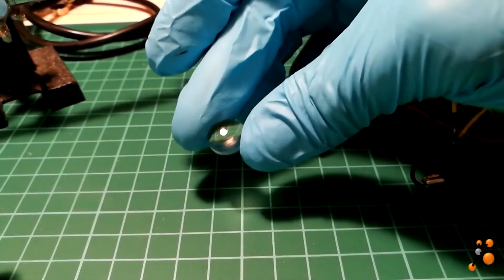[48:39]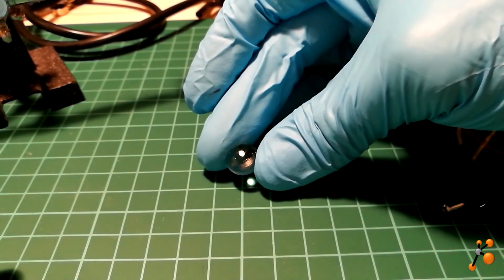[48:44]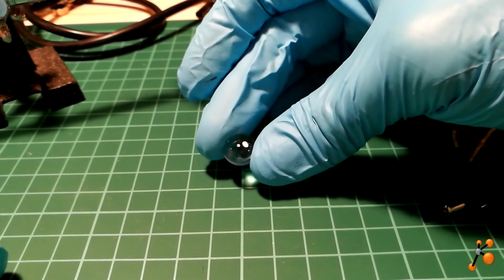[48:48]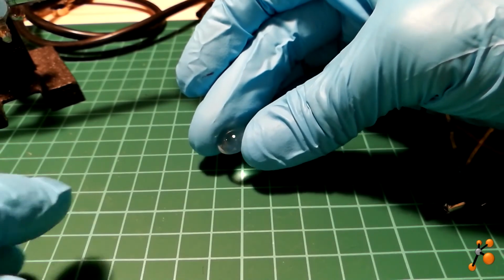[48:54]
Let's remove it from this, disconnect here. Yeah, it's here. And then just with the normal light, you see I am around 1 centimeter from the bottom, and it's really focusing. So I don't know why it's not really nice as we can see now. So I just realized something very interesting. When you remove the LEDs and you use the lens as I used before with the normal light, it works. It means that maybe the distance between the LEDs and the lens is not correct and has to be set up. So just to show you what I saw, I put it in the dark, then put 2.5 volt.
Yeah, I'm at 2.5 volt. Now I'm taking the LEDs in my hand, and then when you put the LEDs, you see it's difficult to focus, but you have a dot. It's much better than when you are too close. Okay, if you are too close, like if I want to make it 5 mm, then of course if you put a piece of paper, you don't have this nice focus. Even with the distance between the lens and the paper of around 1 centimeter, if you put the LED too close to the front of the lens, then it's not a nice focus. You need to be a little bit farther from the LED, as you can see here.
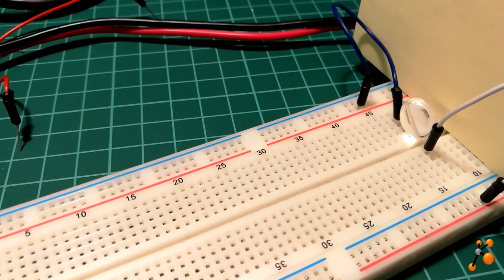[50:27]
Okay, so it's something that I will set up now. So now I just put the LEDs on one support with a breadboard to see what the experimental distance is where the LEDs should be set up. So let's put it in the dark. So here you can see that I set up the lens with a background which is focused at exactly the distance, the 11.7 millimeter, that you have really a dot. And now if you put the source of light too close, you don't have this focus anymore. So it's very important to really define the best distance of your source of light. So now I will measure it.
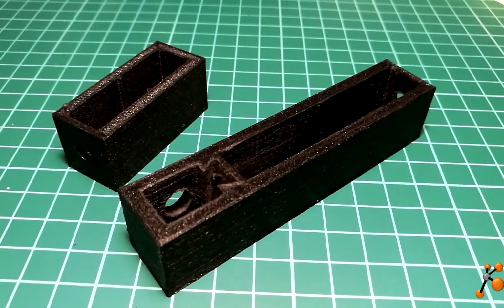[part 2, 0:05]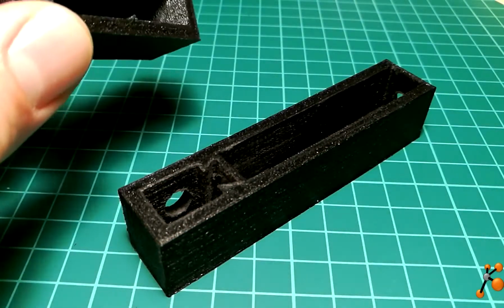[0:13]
Hi everybody, welcome to the third video of the vlog, and today we are going to continue the project concerning the development of a fluorescence detector. On the left here we have the first prototype that we designed and realized, where the distance between the lens and LED was not good.
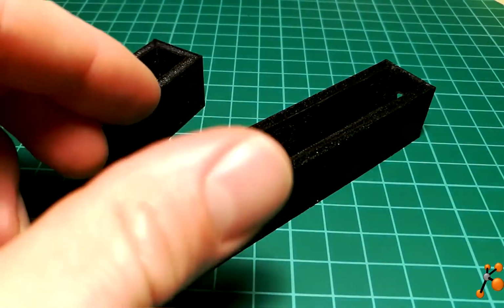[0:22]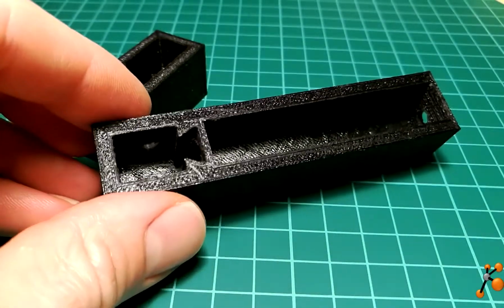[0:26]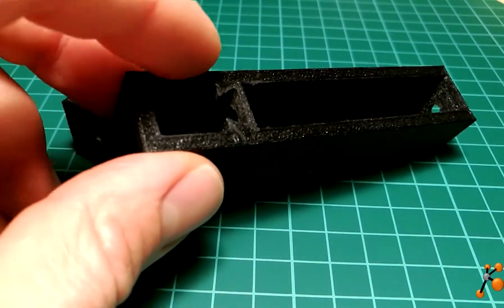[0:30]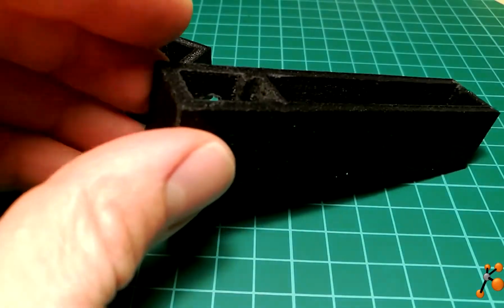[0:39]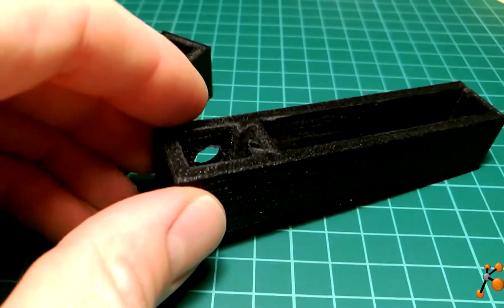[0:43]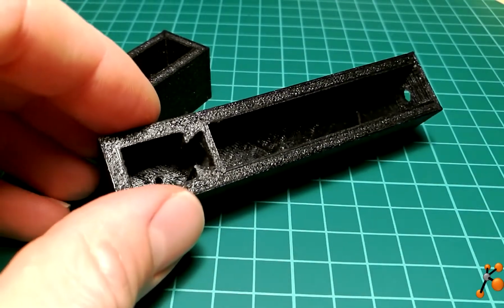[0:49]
Then we designed a second prototype where we adjusted this distance to 68 mm between the LED and lens. We also added here a mask. We also made two holes, one for the capillaries on the bottom part and one on the side part for the fluorescence detector. Today we are going to try to improve this chamber, and we are going to make three modifications.
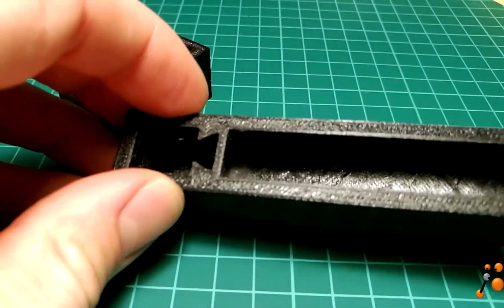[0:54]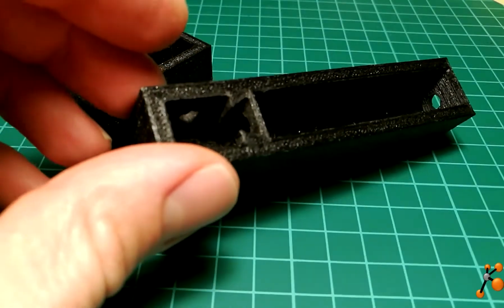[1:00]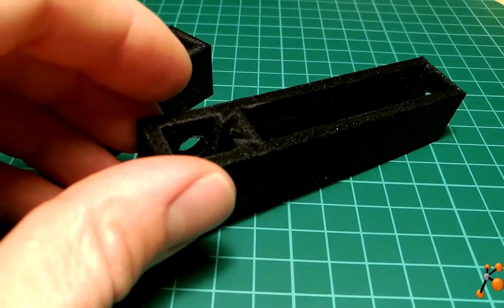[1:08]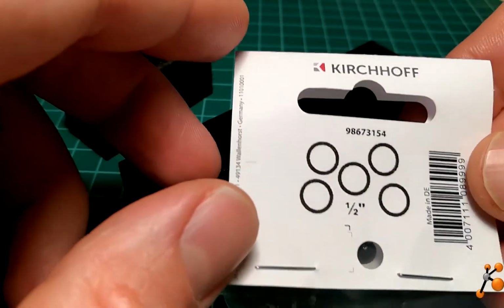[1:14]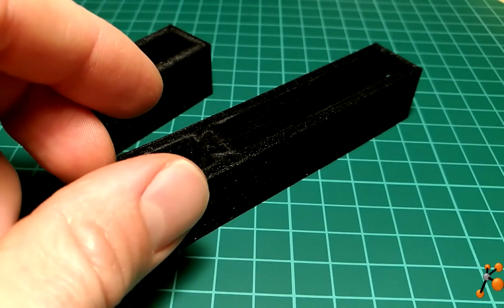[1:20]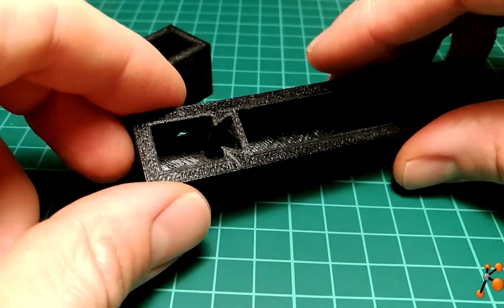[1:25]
The first modification will be the holder part of the lens. In fact, I realized that I spent 30 minutes to modify it, and I did it with a hand tool, so it's not really accurate. So my goal now is to try to make it better, and I went to the supermarket and I bought this shower seal for $5. It cost one box, and my goal is to use it as a holder and to increase the hole here to try to insert both the lens and the seal.
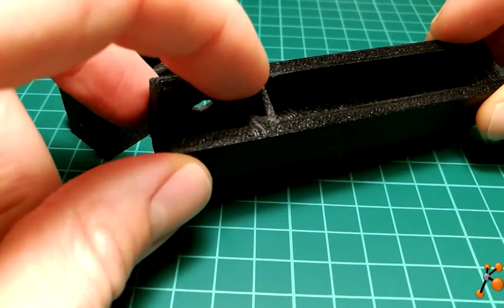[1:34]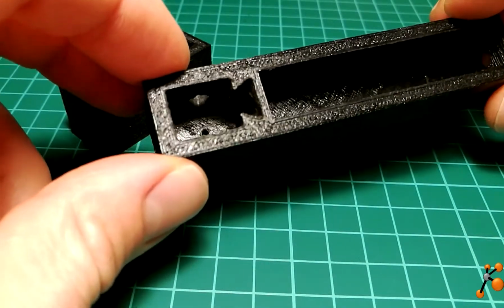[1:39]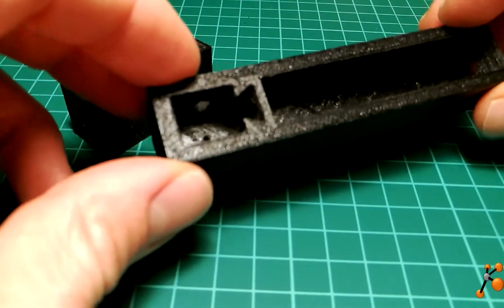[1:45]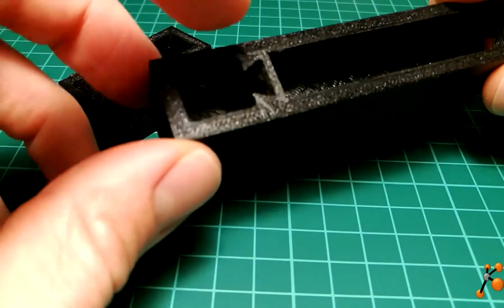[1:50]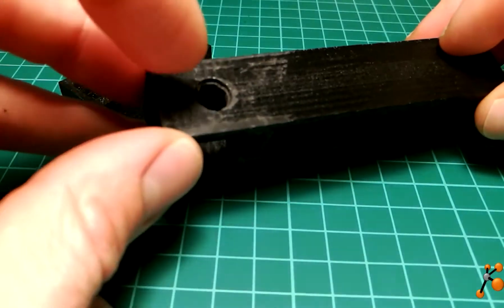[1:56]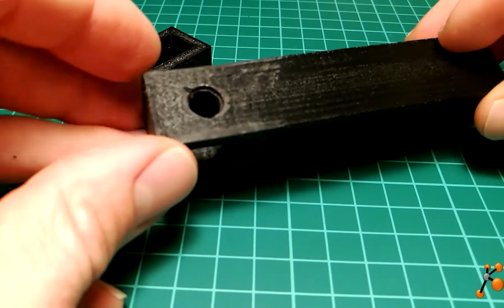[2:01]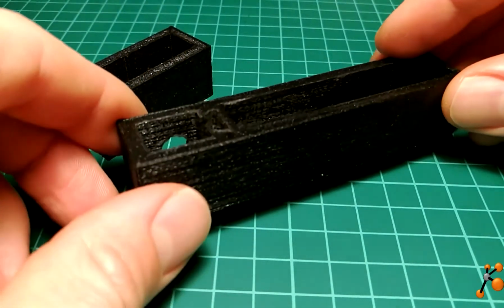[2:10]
Then I will also remove the mask, because if you watch the last part of the second video, you will see that some artifacts appear when we push the LED a little bit, maybe some diffraction due to this mask. So we are going to remove it and see if there is any improvement. And also I tried to add the sensor here, and it seems that the external diameter is not well adjusted. I have to change this diameter and increase it a little bit more. Okay, so let's go to the computer to do this modification.
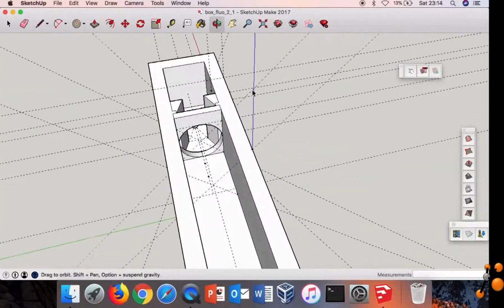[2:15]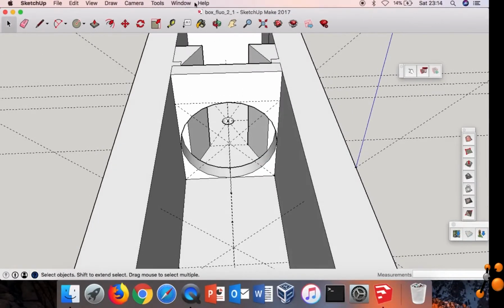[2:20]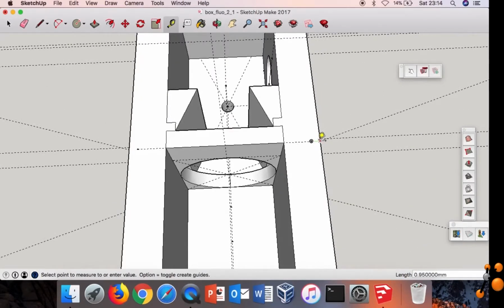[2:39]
So we are now on the computer. We are going to modify the lens holder. We have now a total diameter of 19 millimeter, so it means that the radius is 9.5, here 9.5, and from here to here we have 0.95. Okay, so let's put some guidelines.
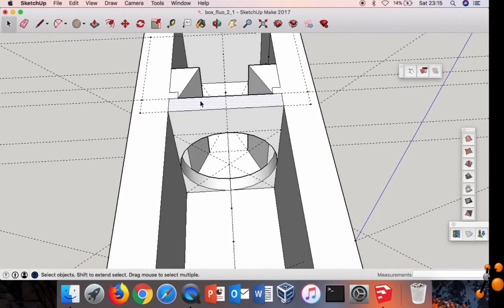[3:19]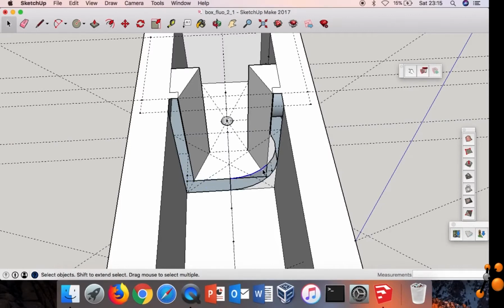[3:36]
0.95, okay, and here 0.95. So we are going to remove the wall to make a new one. So it's always tricky to modify a 3D object. It's always better to have the right dimensions at the beginning, because afterwards it starts to be really complicated.
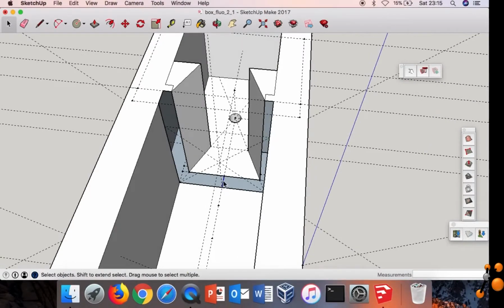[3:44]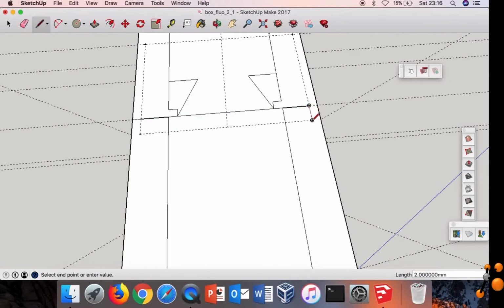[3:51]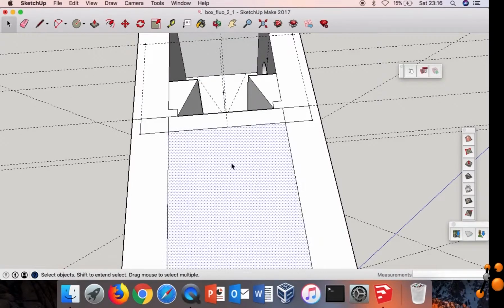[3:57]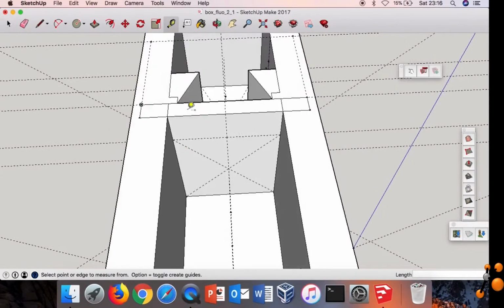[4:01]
Okay, let's draw now the new wall. It closes automatically, thank you. Anyway, I open it again. So this is the new wall. I need also to put some space to be able to insert the lens and the seal. So our new system, I need to extrude one side, but also symmetrically the other side. Like this. I should not forget that everything is going more down now.
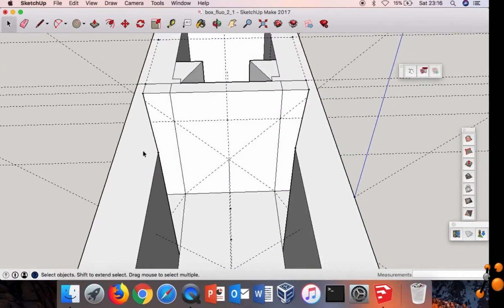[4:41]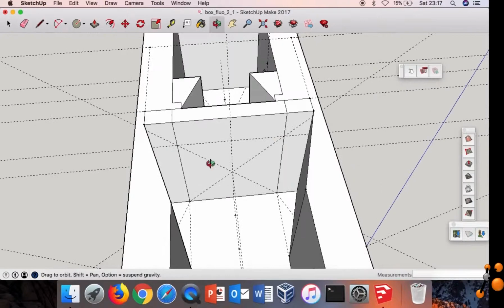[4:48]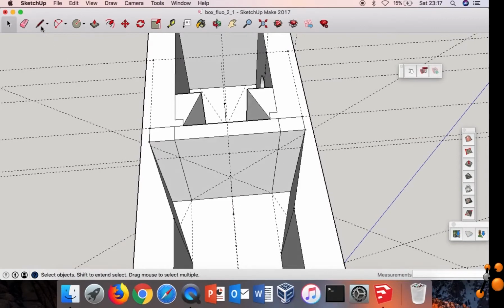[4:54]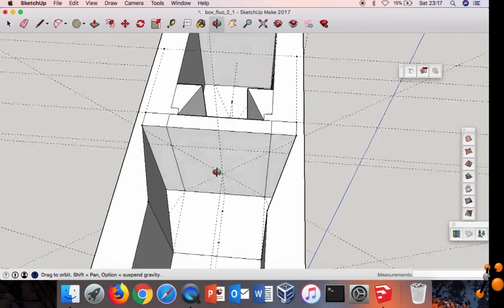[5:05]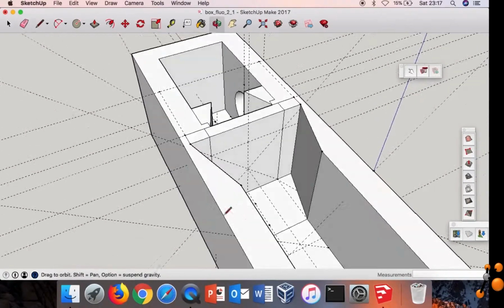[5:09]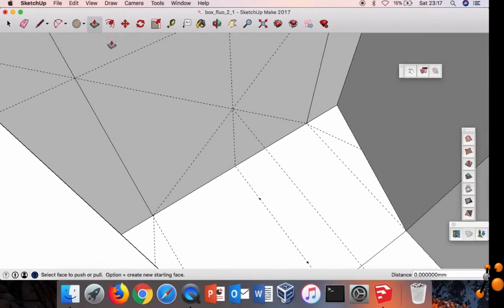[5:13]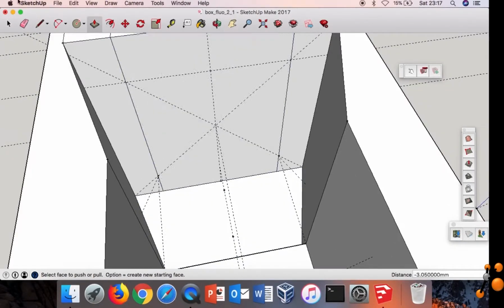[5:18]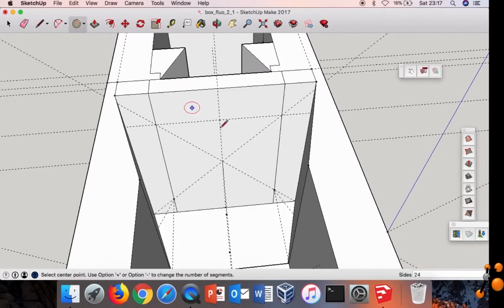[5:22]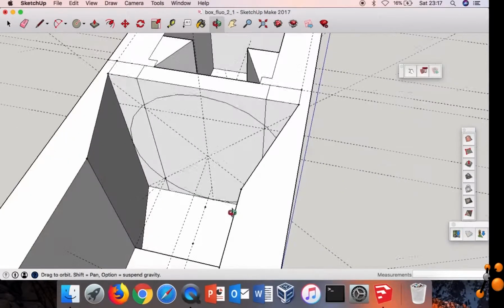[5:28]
9.5 radius, and I need to put the base a little bit down, but not all the base, just one part that I'm drawing now. So from here to here, until here to here, and here. That's it. Now up, let's extrude a little bit until my reference point, which is here. Exactly. I'm going now to make the new hole. Exactly. Perfect, it fits.
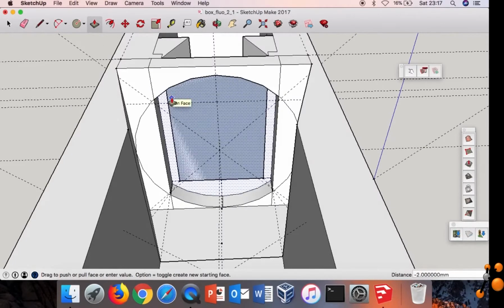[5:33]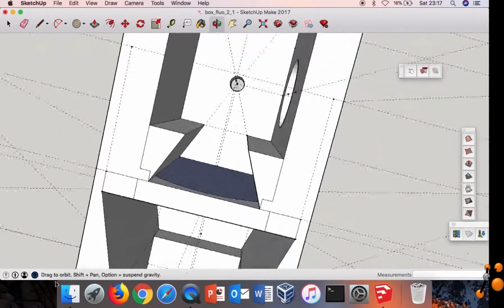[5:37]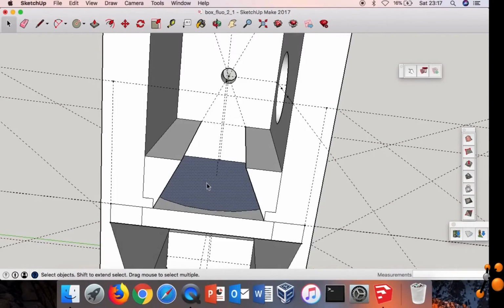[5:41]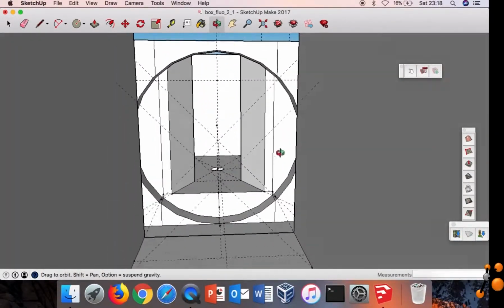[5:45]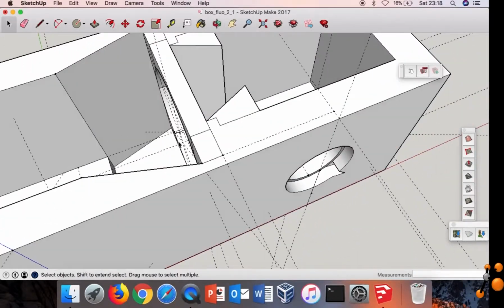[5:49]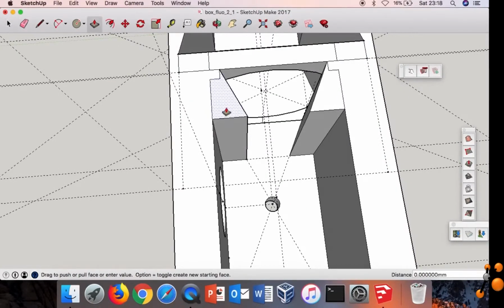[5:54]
Small extrusion on both sides. Remove the artifactual layer. Nice. I have to remove the mask because maybe it's due to... Oh, why is it making this? Yeah, I don't know why. That's okay. So yes, let's remove this and this one. Oh, it's working. I don't know why.
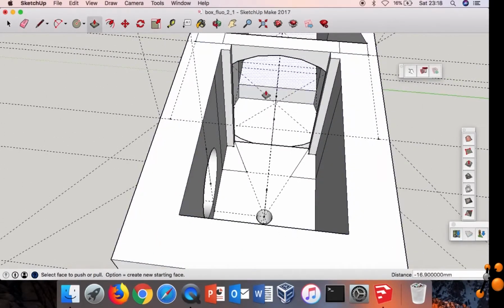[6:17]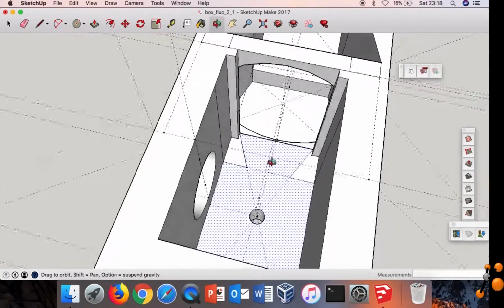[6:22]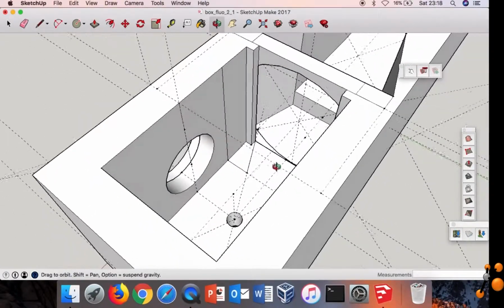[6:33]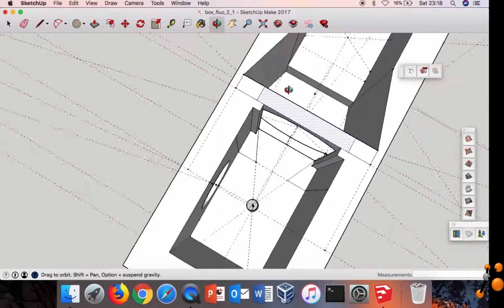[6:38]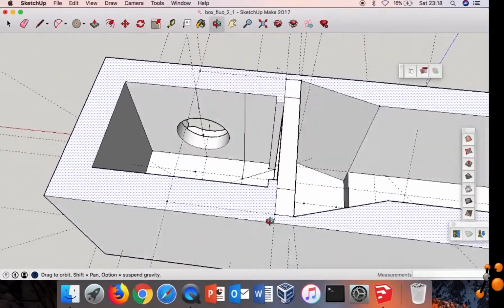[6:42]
So now we remove it because, as I said before, with too much power we have some strange diffraction, maybe it's due to this. So if I remove it and do the same experiment and I can show that I don't have diffraction, then it's because of this, and I have to redesign or do something else. I was also thinking that 1 millimeter is really weak, so maybe I should put some additional wall. Yes, maybe here to here.
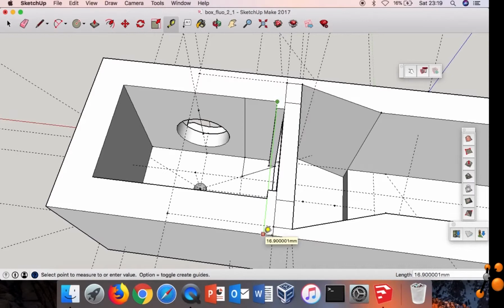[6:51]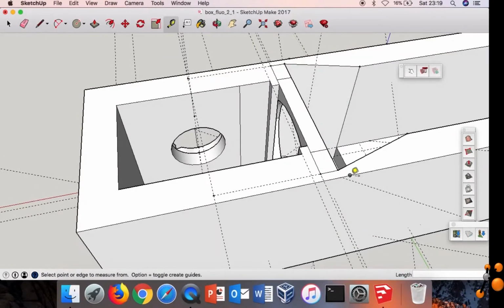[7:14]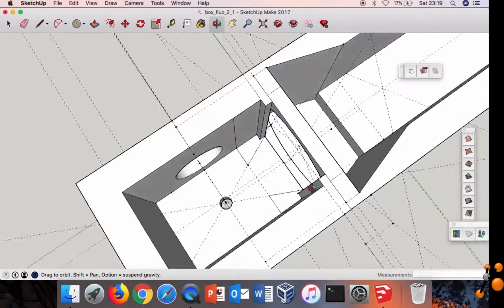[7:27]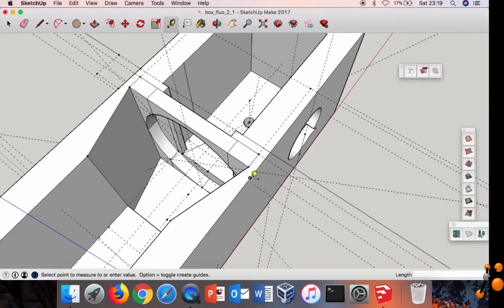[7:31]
Okay, here to here I have, if I put 4 is good, 4 also, 4, 4, 4, yes, and the other side the same. 4, 4, 4.
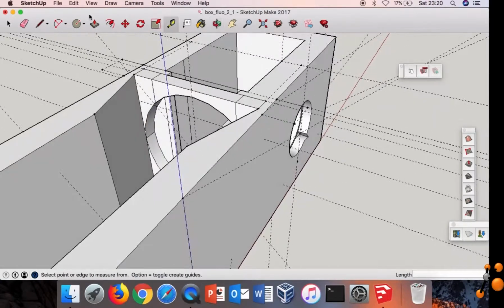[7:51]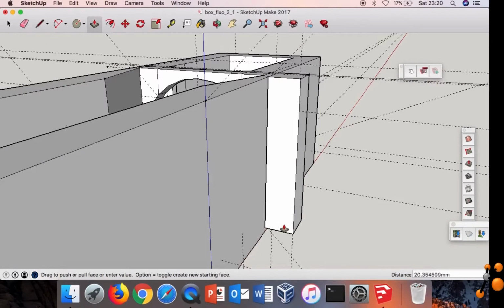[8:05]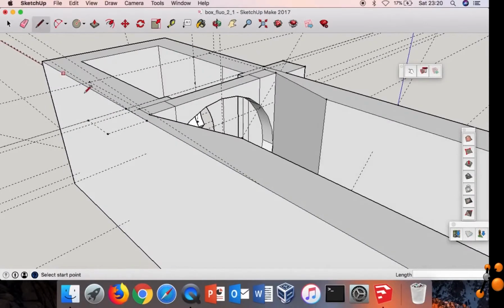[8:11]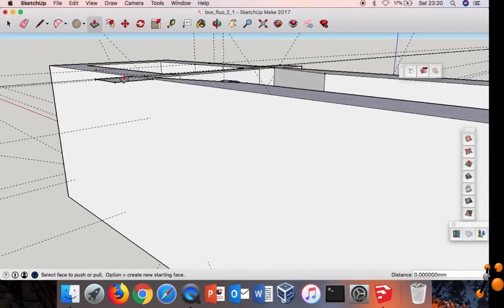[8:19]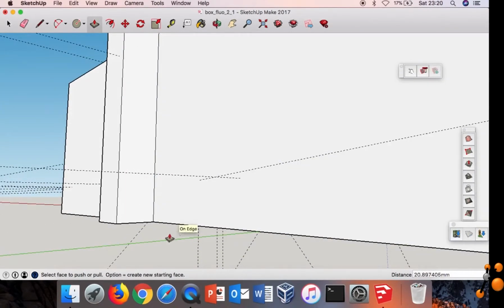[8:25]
Okay, now I can draw. I have reference point. Okay, cool. I can extrude until here. Perfect. We are going to do the same in the other side, like this. Extrude until, yes, the edge. It's cool.
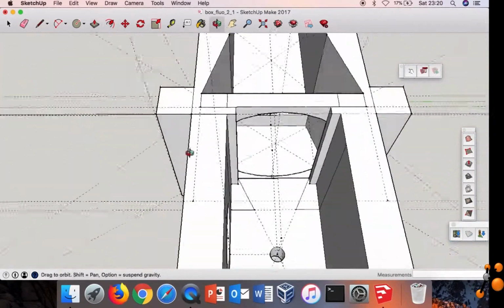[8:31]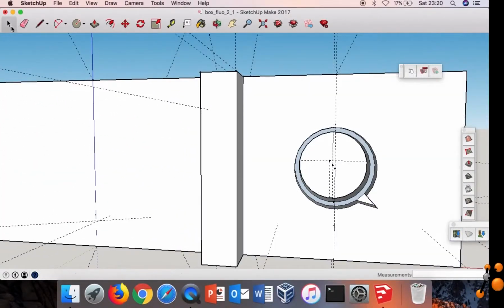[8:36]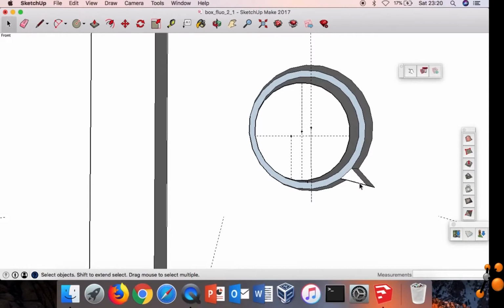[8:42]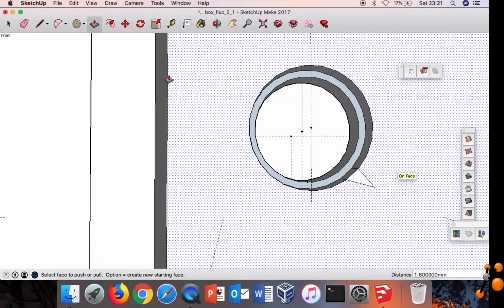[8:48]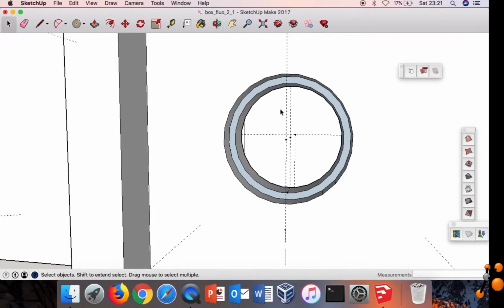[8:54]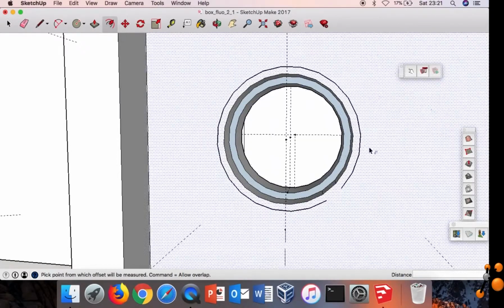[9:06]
Okay, so now I'm going to increase the diameter of this guy, which may be not simple. First I should maybe put it back, this stuff. Yeah, remove some line. Then take the diameter of this guy. We can increase it. I don't know, 0.5, so it will be 1 millimeter more. I think now is good. Let's complete the cycle.
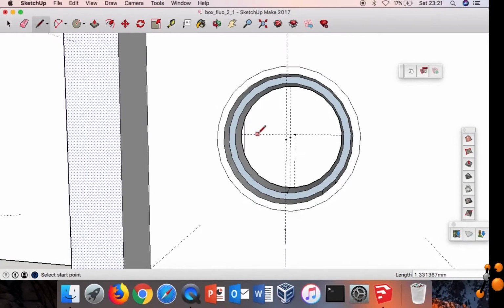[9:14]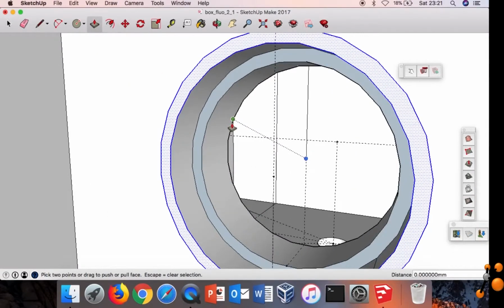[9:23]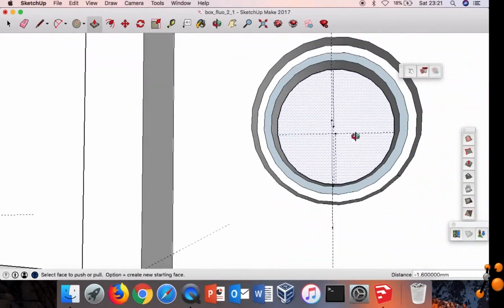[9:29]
And then I would like to extrude exactly this region, to join to this region. Exactly. Nice. I can also see if I could remove this. Yeah, then it will be better. I think I made a mistake before for my sensor. It's not nice. I have to use a tool to put inside, and I think it's better to redimension it.
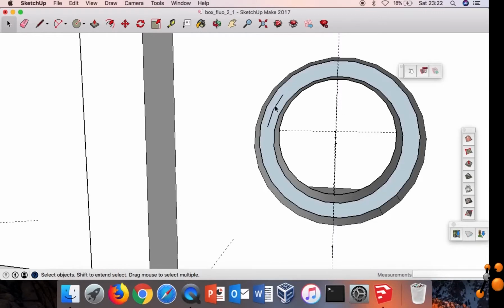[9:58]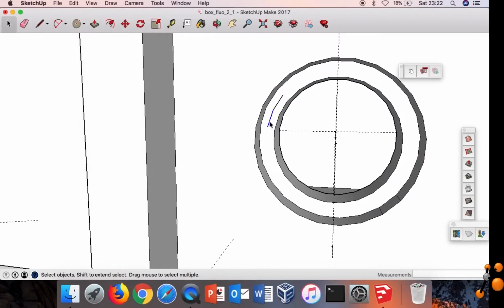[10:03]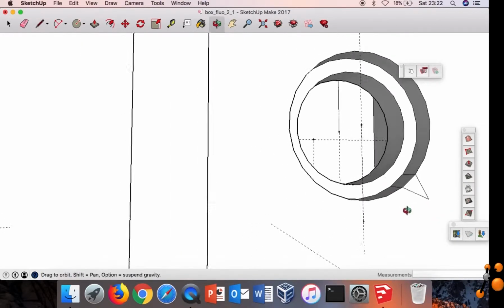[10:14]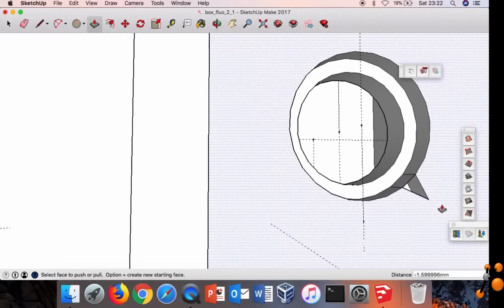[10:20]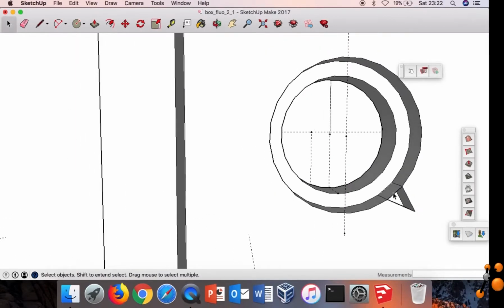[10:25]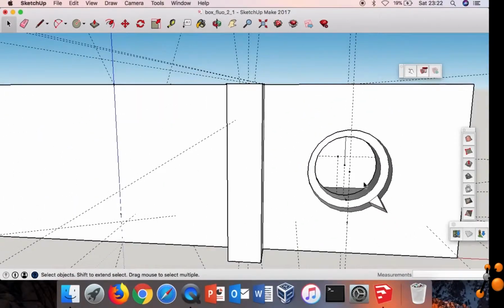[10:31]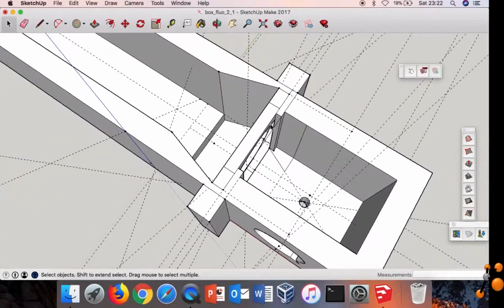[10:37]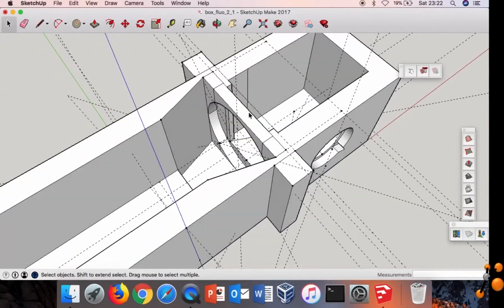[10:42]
This. Then not forgot to add here this little stuff. Okay, super. So I think now we are done. We've changed the older part, remove the mask, and change the external diameter for the sensor. So let's go now to the printer.
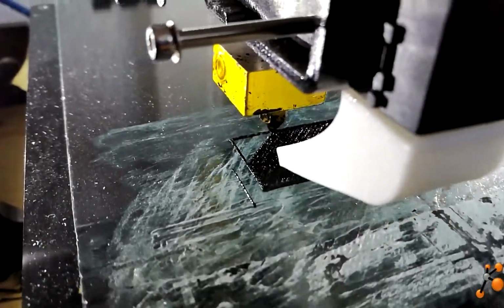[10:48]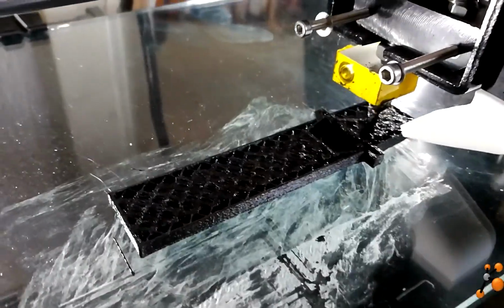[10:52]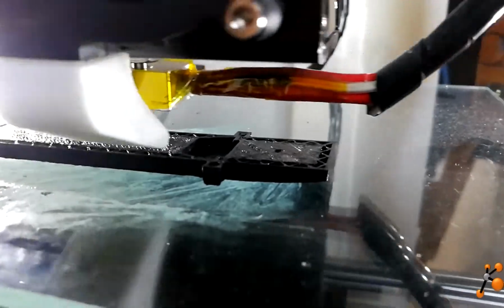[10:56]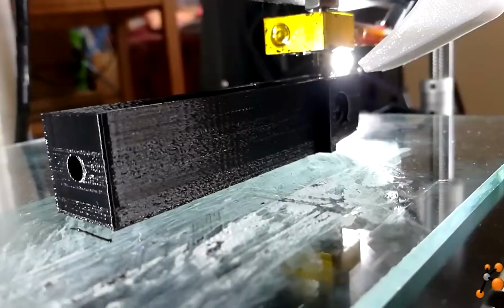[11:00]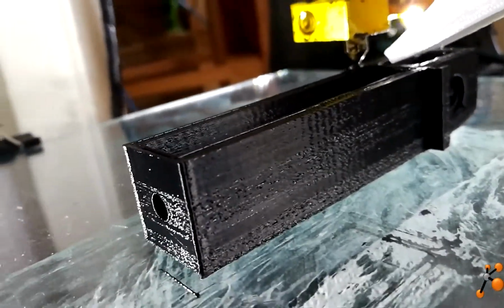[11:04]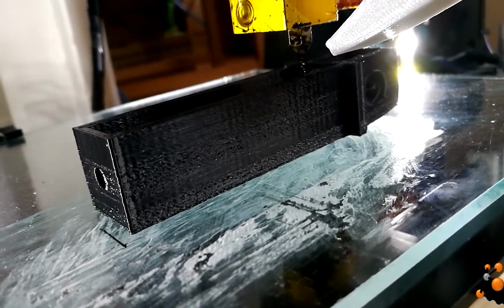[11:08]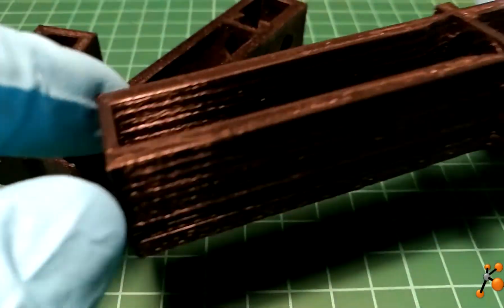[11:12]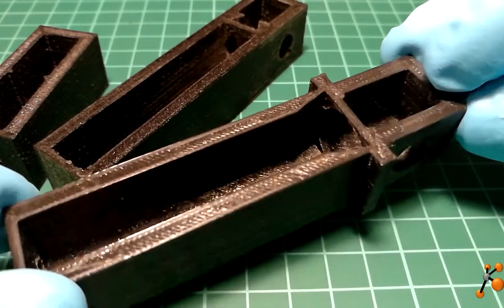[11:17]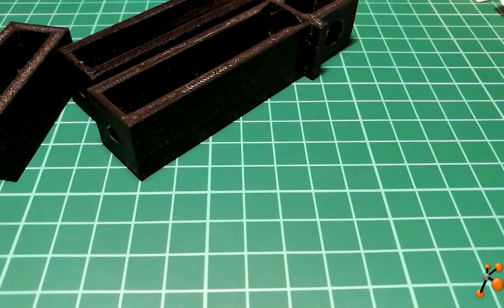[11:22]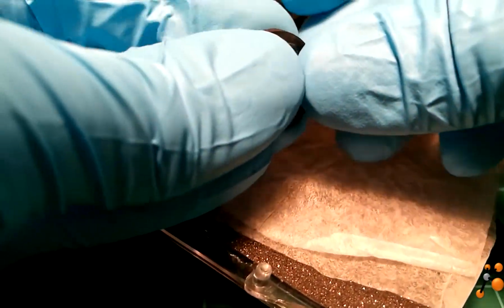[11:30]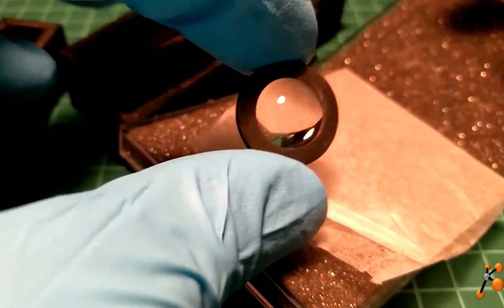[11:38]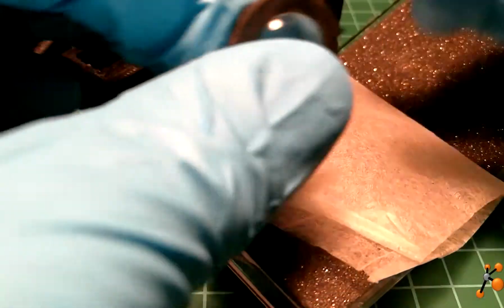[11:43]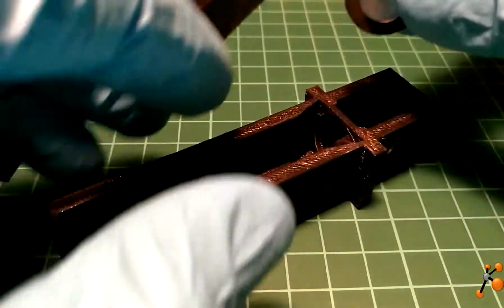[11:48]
So now we have the printed chamber, the new printed chamber with the new holding system. So we are going to take the lens. I can show you. The lens is here. Then it fits perfectly with the shower seal. It's really nice, like this. So now I will insert it here.
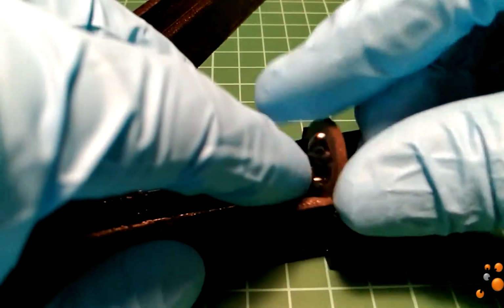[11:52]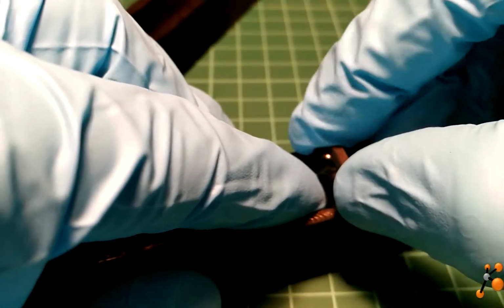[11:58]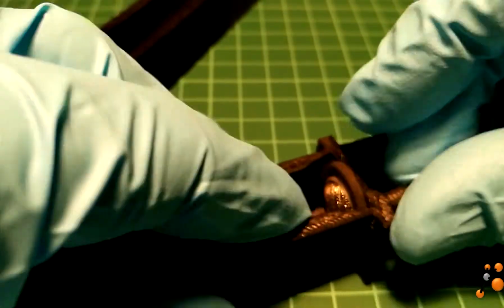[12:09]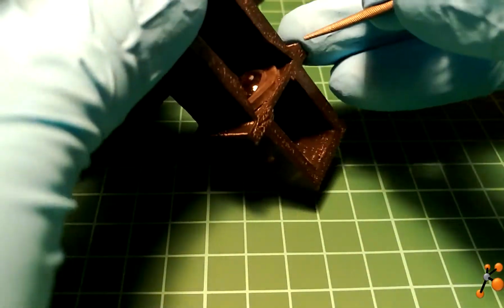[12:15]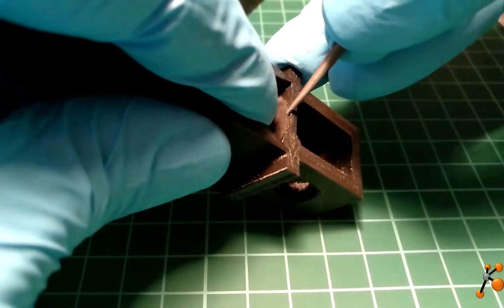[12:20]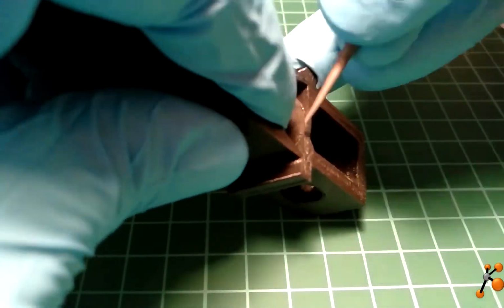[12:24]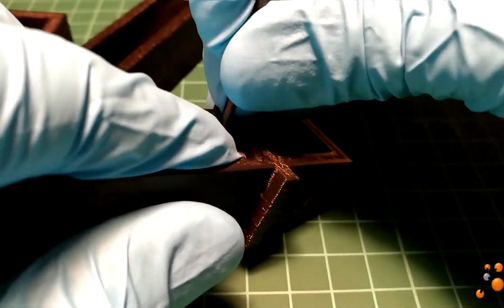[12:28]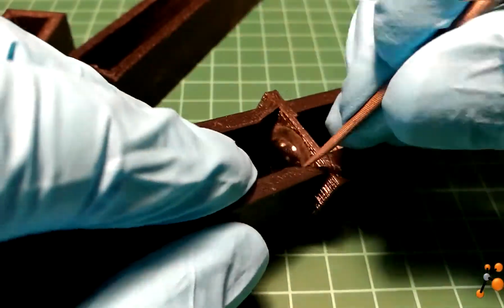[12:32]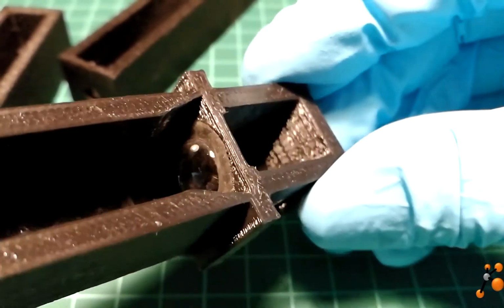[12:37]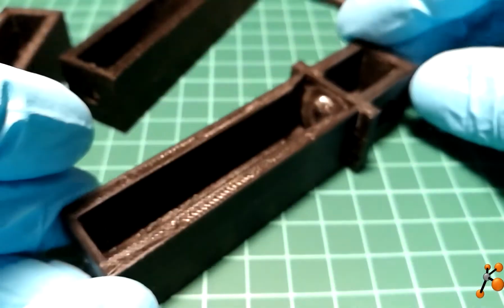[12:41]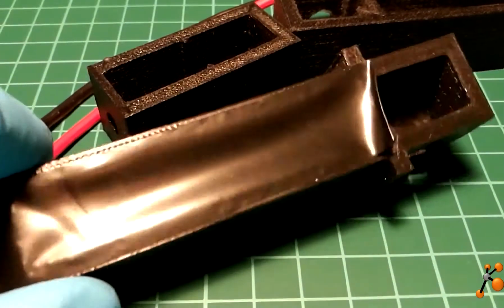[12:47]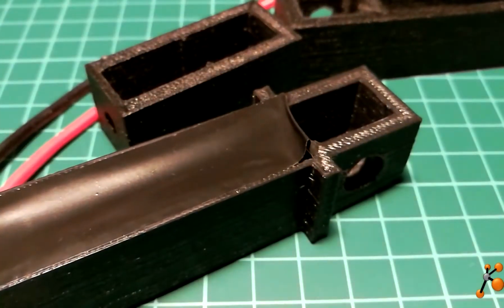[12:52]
So this is the tricky part. Slowly, with some rotation. So now I need to use some tool. Yeah, so it's nicely fitting inside. So now let's try it. So now I connect the LEDs, plus I had this tape on the top of the chamber as I did before, and we are already at 2.5 volt.
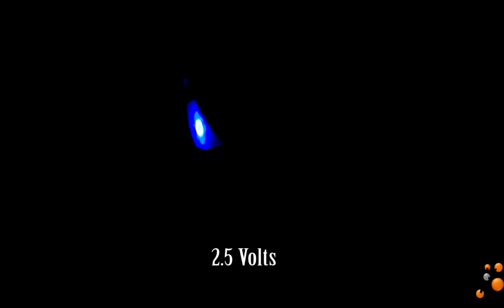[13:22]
I'm going to turn off the light to show you how the beam is focused. So now I'm going to add the paper, and as you can see, it's nicely focused at the hole of the capillaries. But you see, I have really a strange shape. I don't know why. Let's pulse a little bit more the system now to 4 volt. To 4 volt, I add now the paper, and you see I still have this strange shape. However, the beam seems to be focused really here on the hole of the capillary. So this is the positive aspect, that the holder, new holder works.
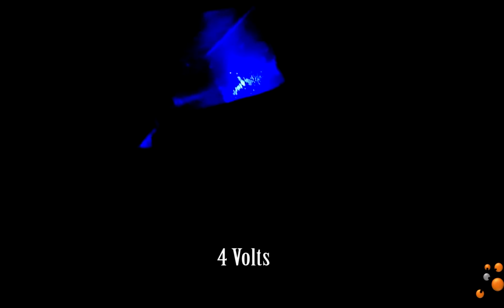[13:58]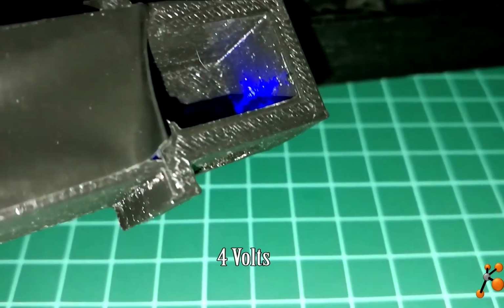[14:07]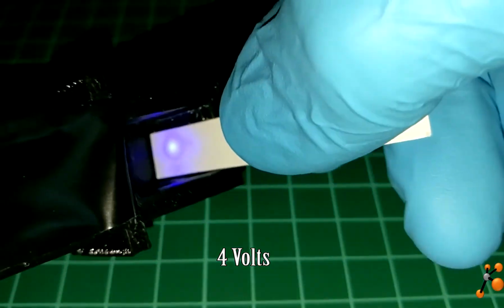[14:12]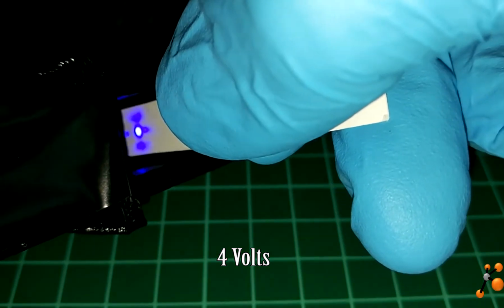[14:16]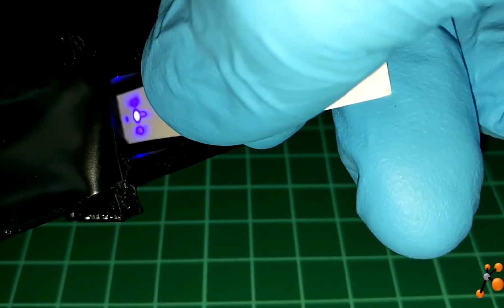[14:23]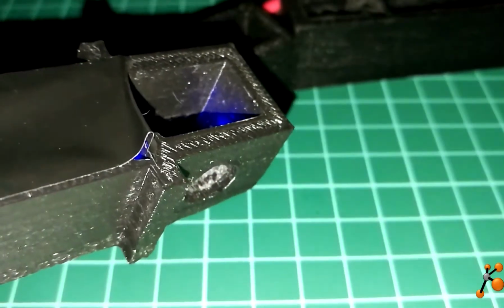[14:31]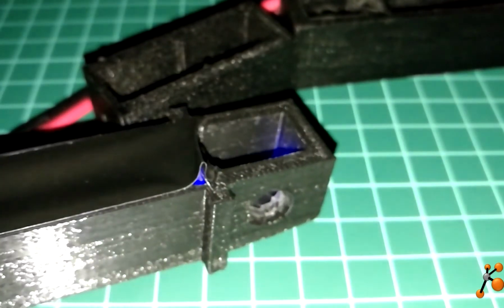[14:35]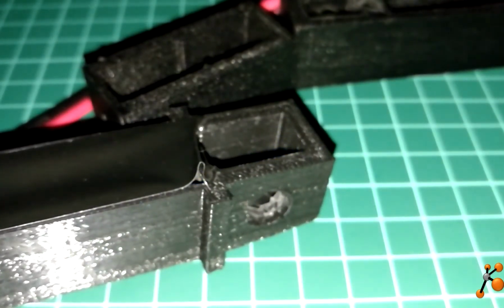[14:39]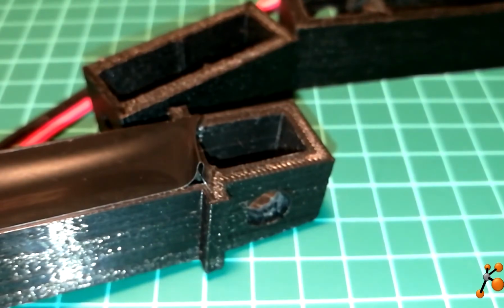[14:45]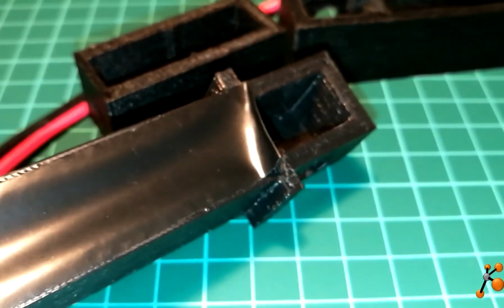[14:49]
However, I have this strange shape. So if you have suggestion, anything to help me, I will be very interested to hear your comment. If you have some new idea why I have this strange shape. So let's modify again and see if I can improve it.